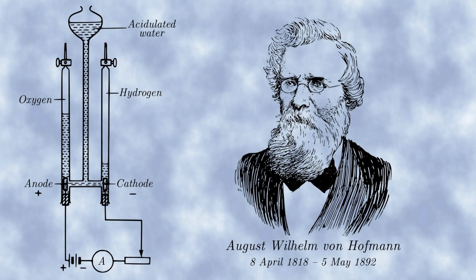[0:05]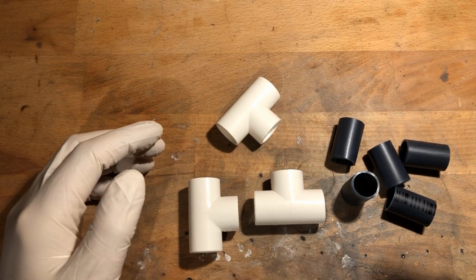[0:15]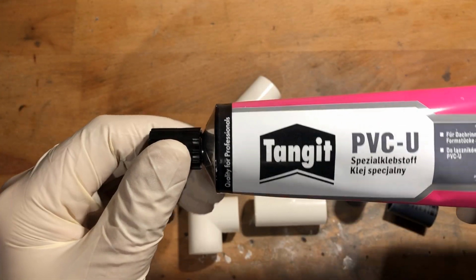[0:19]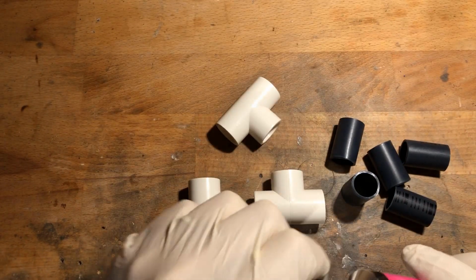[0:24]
A Hofmann voltameter is an apparatus for electrolyzing water, invented by the German chemist August Wilhelm von Hofmann in 1866. First, I connected three PVC T's with an inner diameter of 20 mm, which are actually intended for drinking water installation, using PVC pipe and appropriate adhesive.
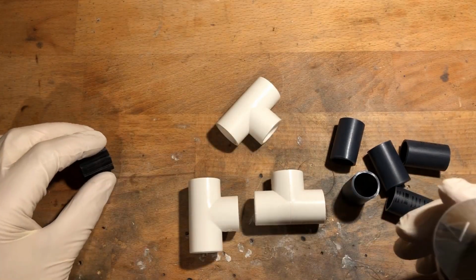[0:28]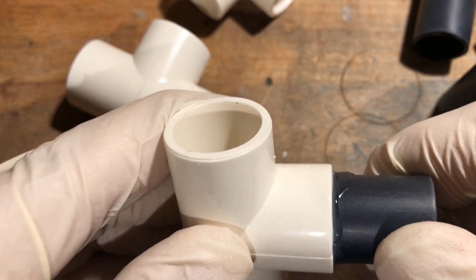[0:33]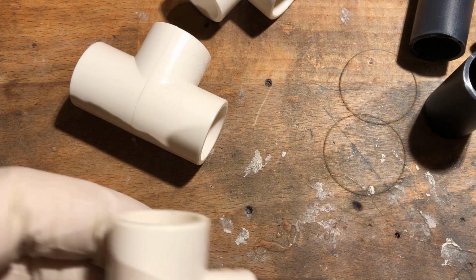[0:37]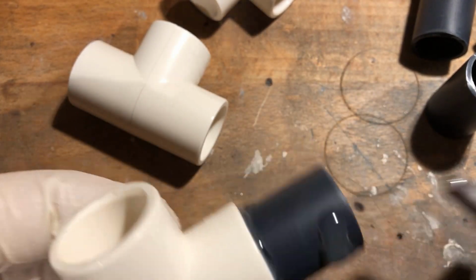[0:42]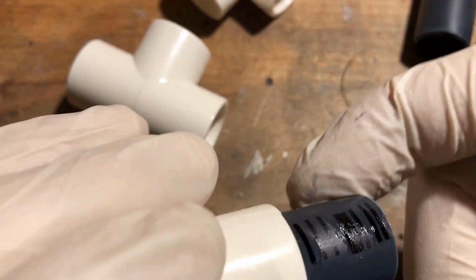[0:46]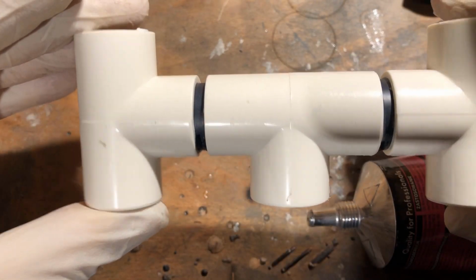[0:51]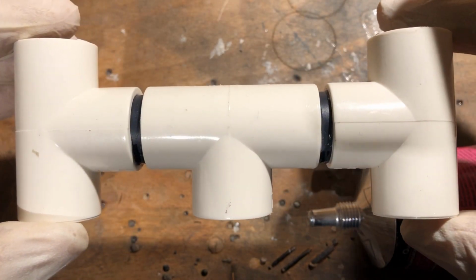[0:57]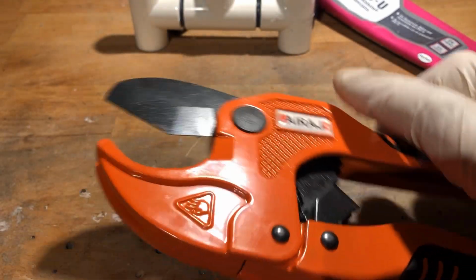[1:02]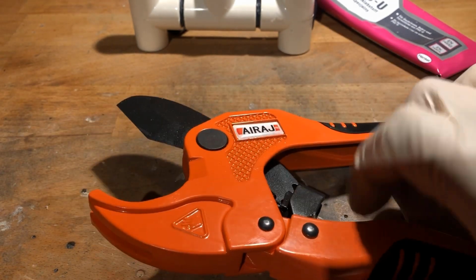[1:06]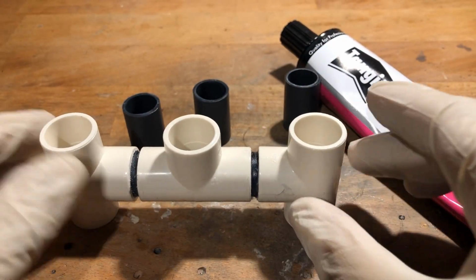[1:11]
I used a special pipe cutter to cut the PVC pipe to length. This way, perfect cuts succeed. In the next step, I cut three more PVC pipes to length accordingly.
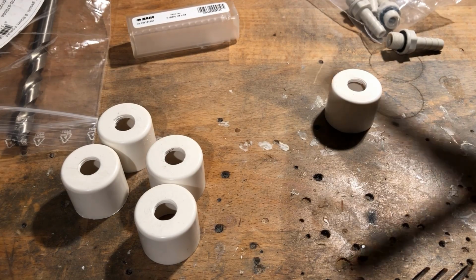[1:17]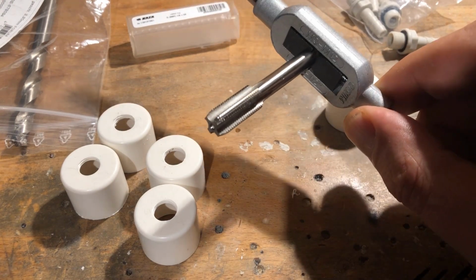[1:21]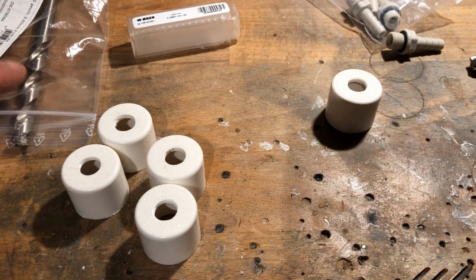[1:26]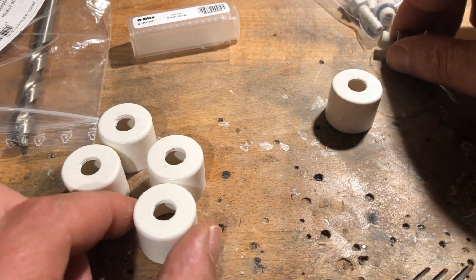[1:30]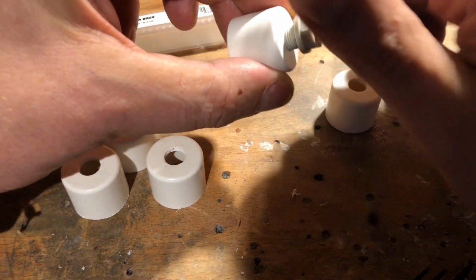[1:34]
In five PVC pipe caps with an inner diameter of 20 mm, 1/8 inch threads were cut. Pre-drilling was done with an 8.8 mm drill. The threads are intended for screwing in 1/8 inch by 6 mm screw and hose nozzles. These already have an O-ring for sealing.
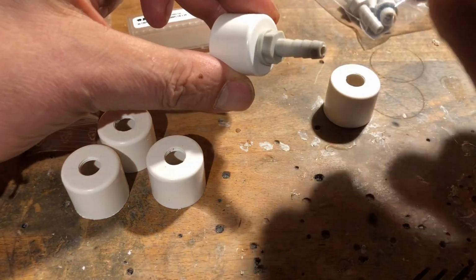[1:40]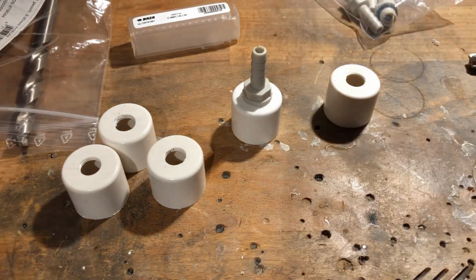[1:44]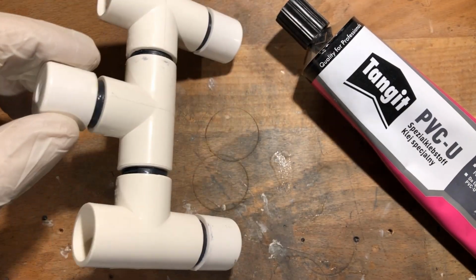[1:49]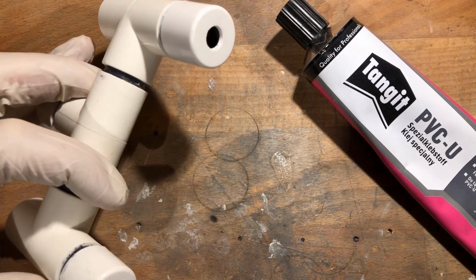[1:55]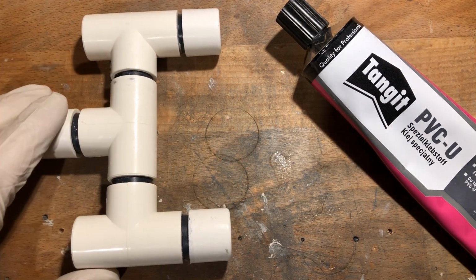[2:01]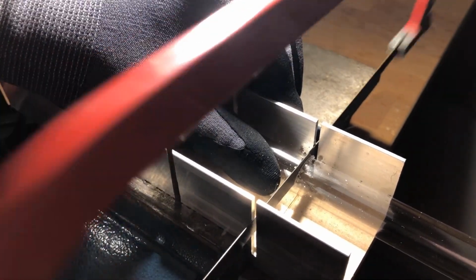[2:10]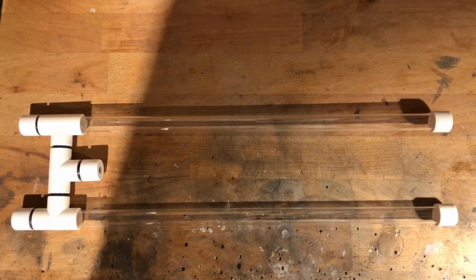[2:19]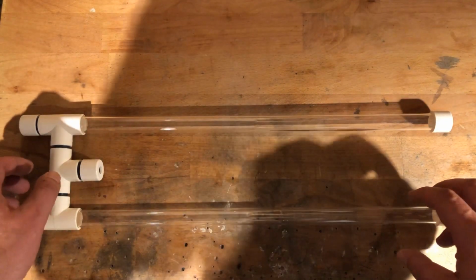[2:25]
Three of the pipe caps were then connected to the T's using the already cut pipes. A 1 meter long acrylic tube with an outer diameter of 20 millimeters and an inner diameter of 16 millimeters was then cut to size, giving me two pieces with a length of 450 millimeters. After cleaning the cutting edges, they were glued into the T's and fitted with the two remaining pipe caps. I used a two-component epoxy adhesive for this.
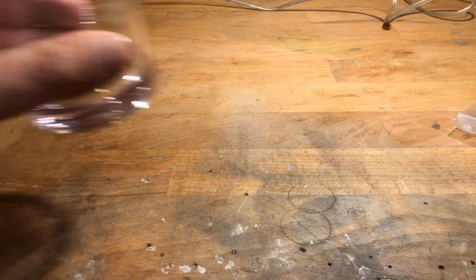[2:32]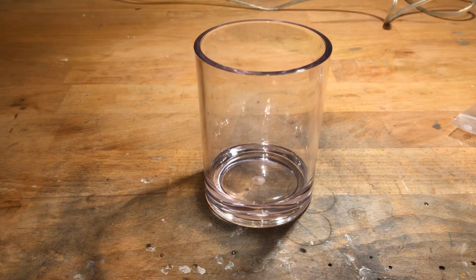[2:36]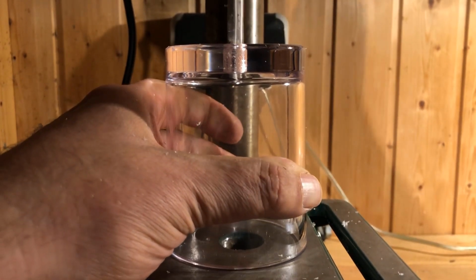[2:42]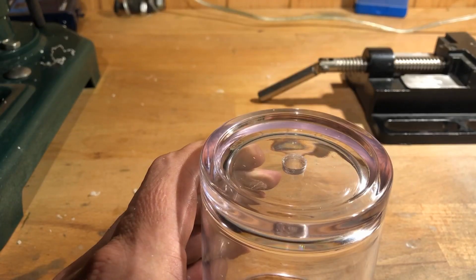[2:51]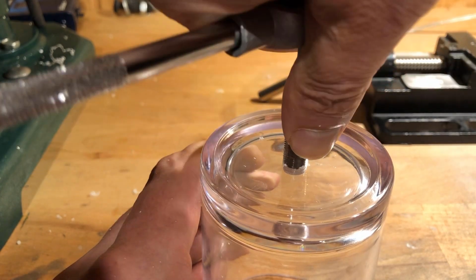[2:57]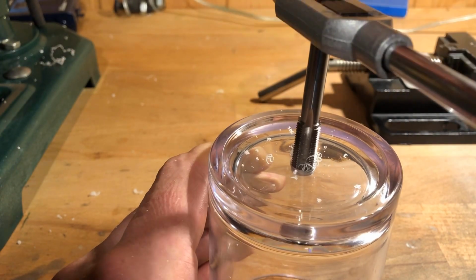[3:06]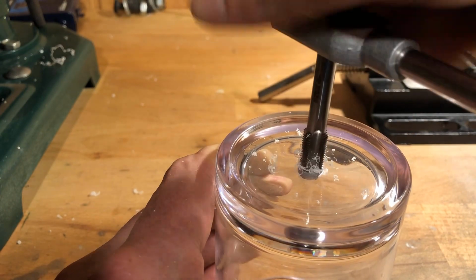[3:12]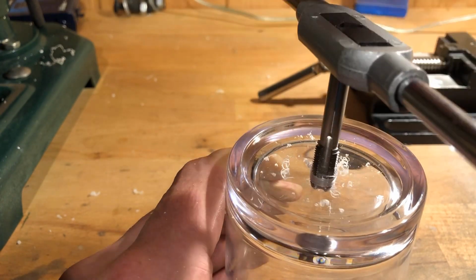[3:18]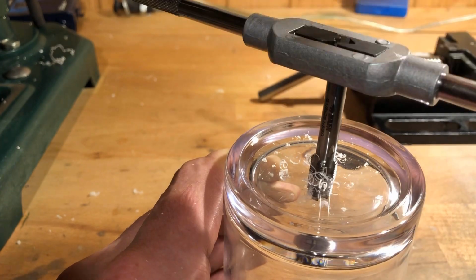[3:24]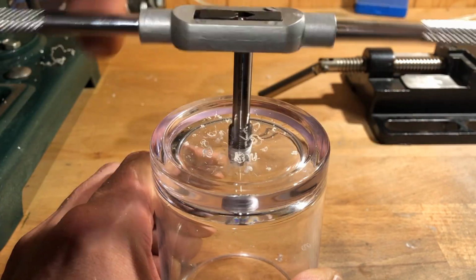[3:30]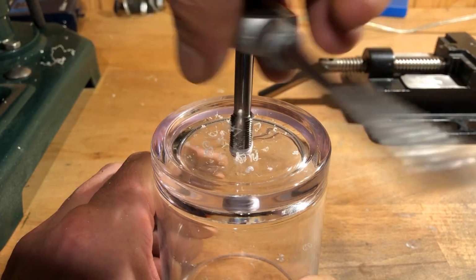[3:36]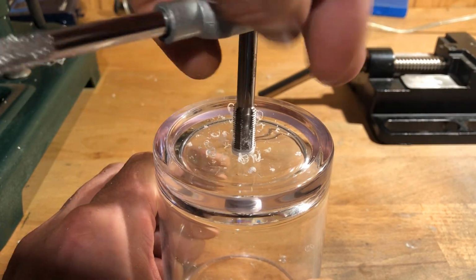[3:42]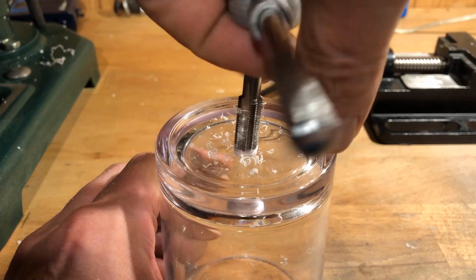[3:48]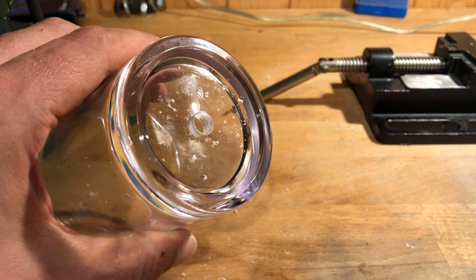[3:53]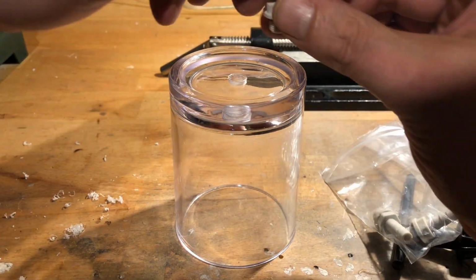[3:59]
An 8.8 mm hole was drilled into the bottom of this acrylic beaker with a capacity of 400 milliliters. Then a 1/8 inch thread was tapped. A screw and hose nozzle was also screwed in here.
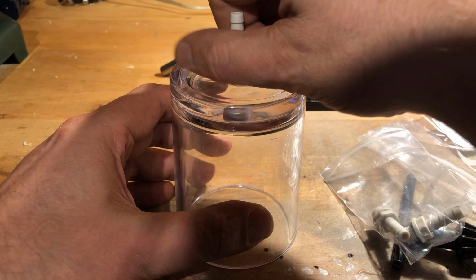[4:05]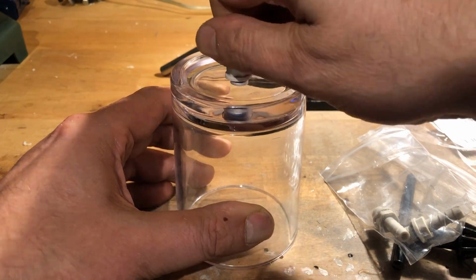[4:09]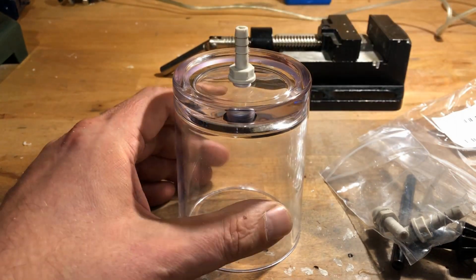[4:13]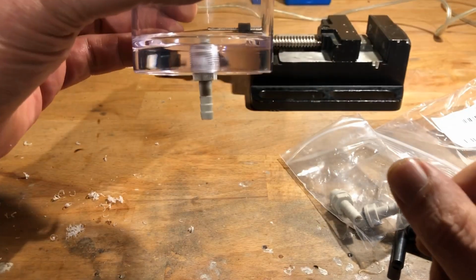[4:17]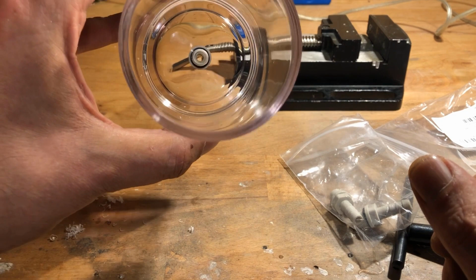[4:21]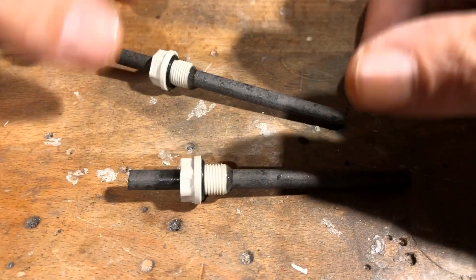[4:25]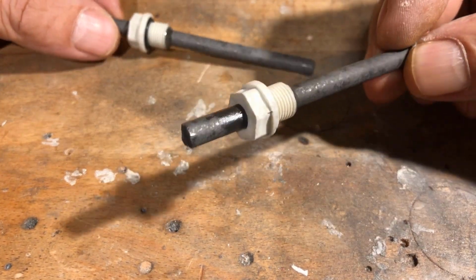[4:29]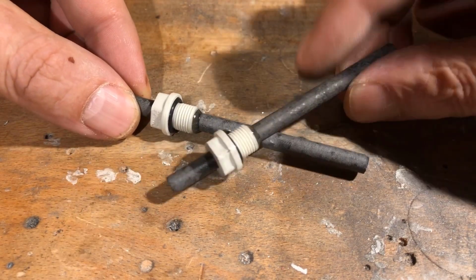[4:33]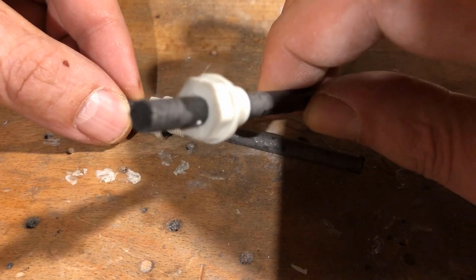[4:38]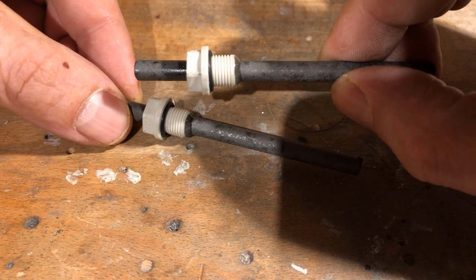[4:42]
I used two graphite rods with a diameter of 6 mm and a length of 87 mm as electrodes. On two screw and hose nozzles, the hose nozzle was cut away, the bore was widened to 6 mm, and the graphite rods were then glued in place with two-component epoxy.
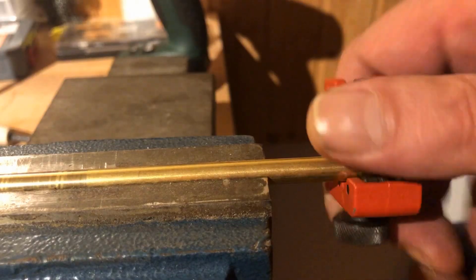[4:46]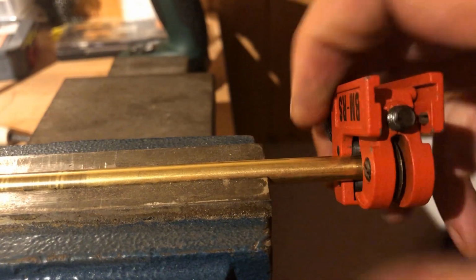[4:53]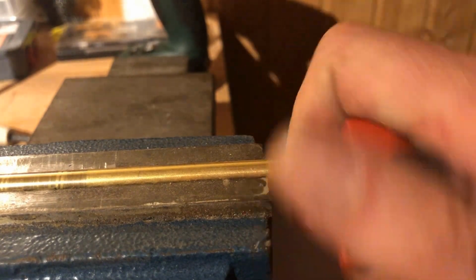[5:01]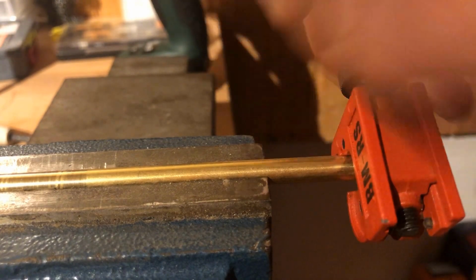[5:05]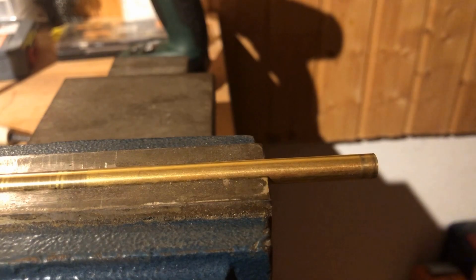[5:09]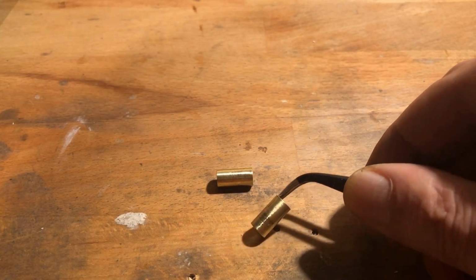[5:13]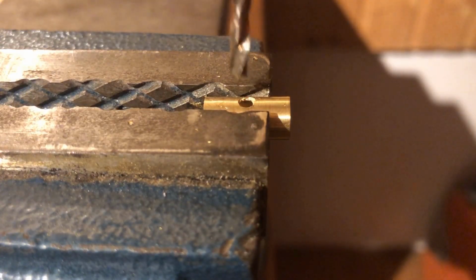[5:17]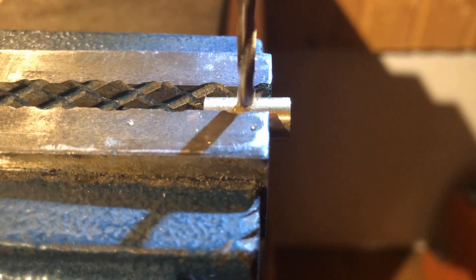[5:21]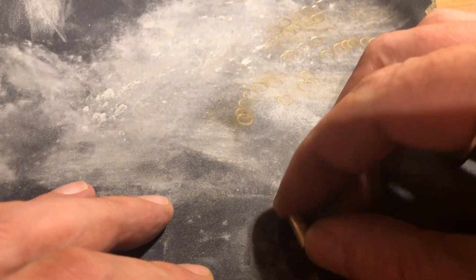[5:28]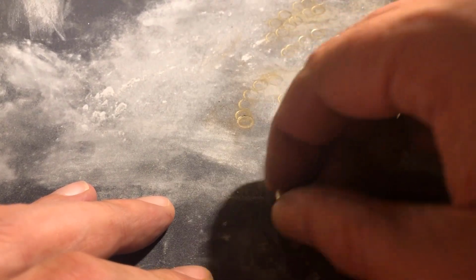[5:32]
Next, I made the terminals for the electrodes. First, I cut two brass tubes with an outer diameter of 7 mm, an inner diameter of 6 mm, and a length of 14 mm with a tube cutter. A 3 mm hole was then drilled in the center of the two brass tube sections. The holes were afterward deburred on the outside and inside with fine sandpaper.
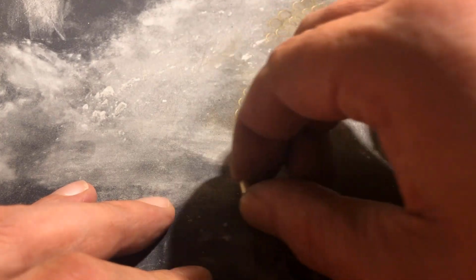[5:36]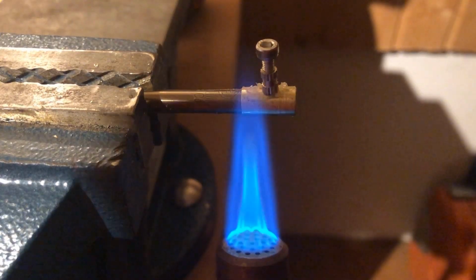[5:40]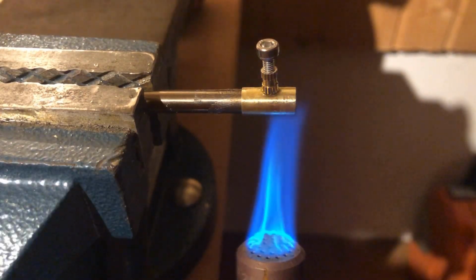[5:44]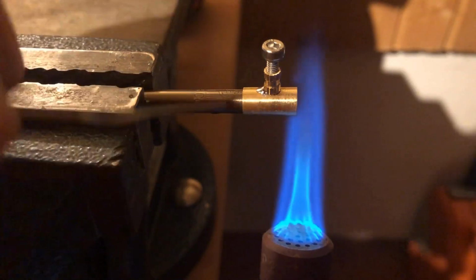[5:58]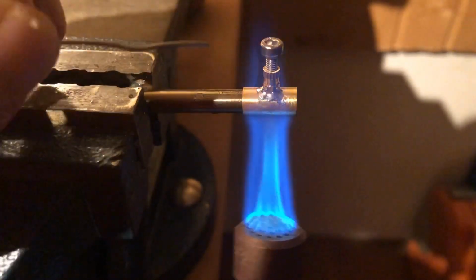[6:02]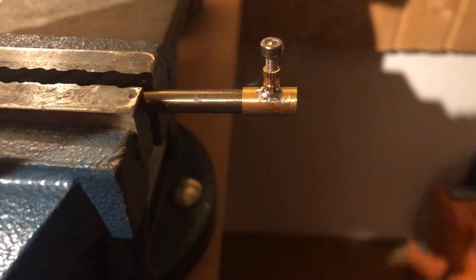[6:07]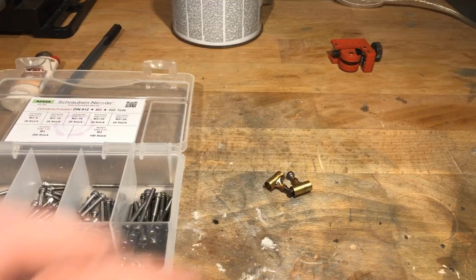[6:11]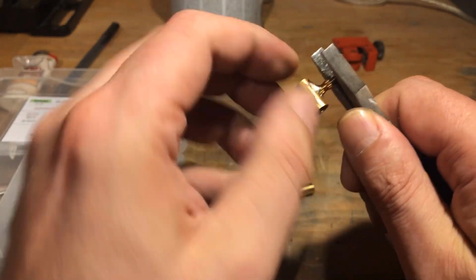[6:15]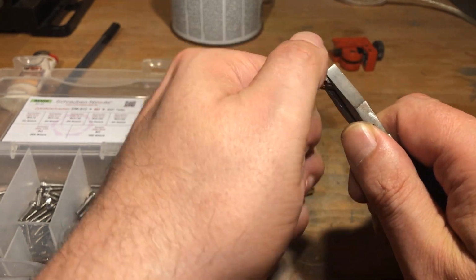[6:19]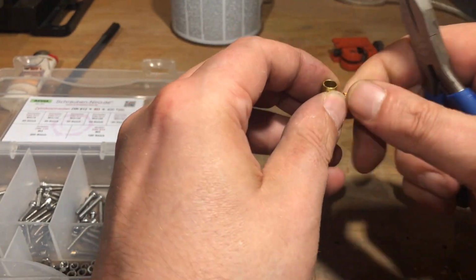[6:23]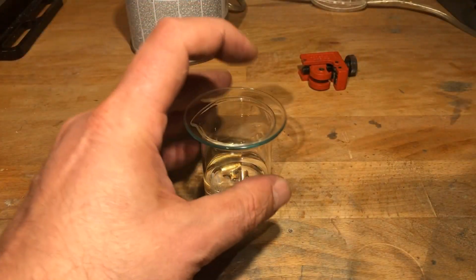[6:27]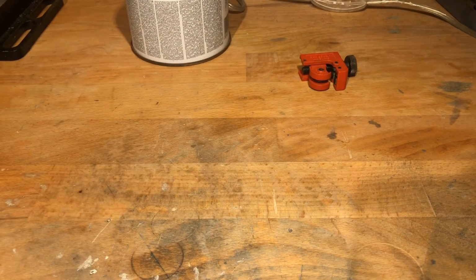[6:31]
M3 brass press nuts were soldered to the two brass tubes. The screwed in stainless steel screw helps to ensure that the hole and the thread are in alignment. Flux should also be used to ensure clean soldering. After cooling, the stainless steel screws were removed. To remove excess flux, the brass tubes were placed in isopropanol for 1 hour.
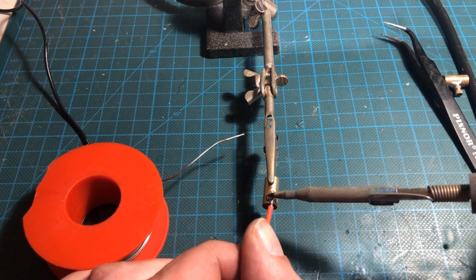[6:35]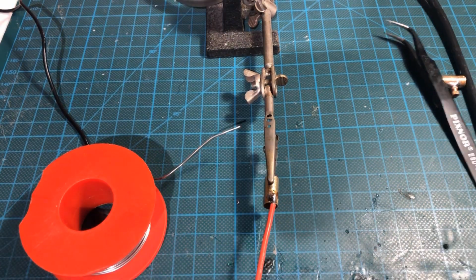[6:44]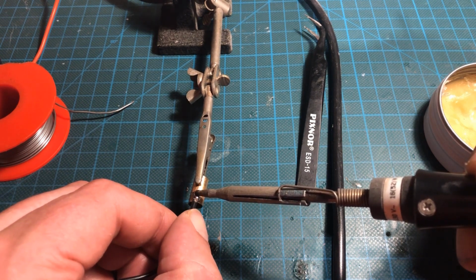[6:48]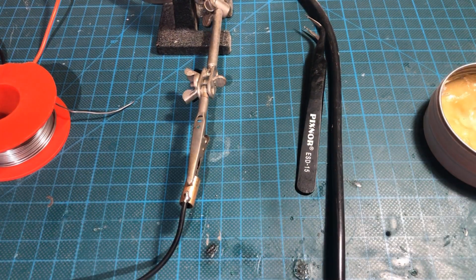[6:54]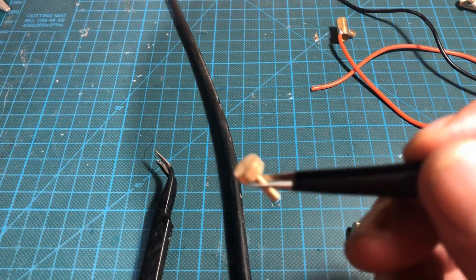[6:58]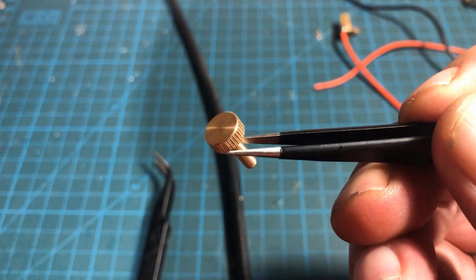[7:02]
Subsequently, stranded wires were soldered on. The sheathing of the wires I use is made of silicone and is therefore resistant to heat and chemicals. To ensure proper galvanic contact with the graphite electrodes, I utilize M3 by 10 mm brass knurled screws.
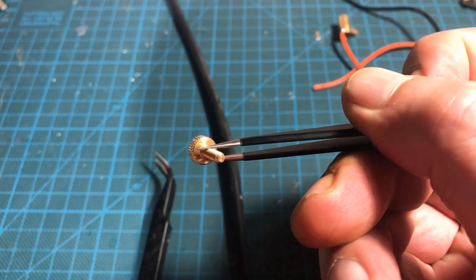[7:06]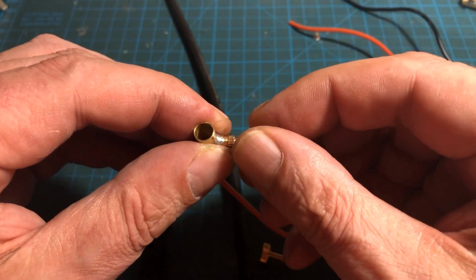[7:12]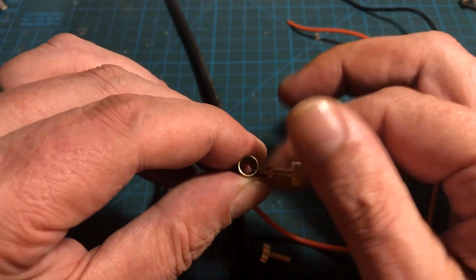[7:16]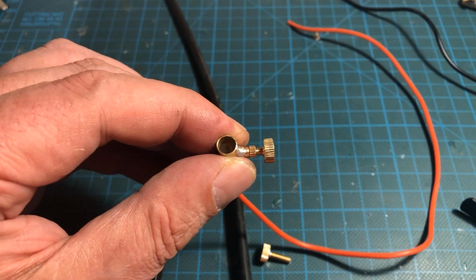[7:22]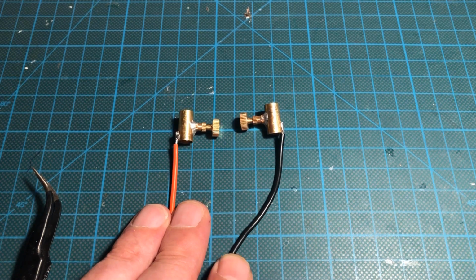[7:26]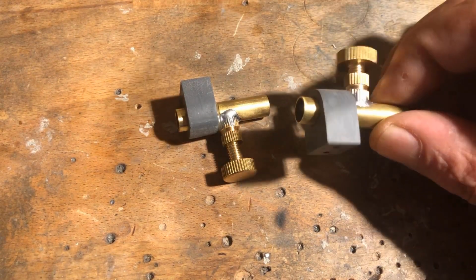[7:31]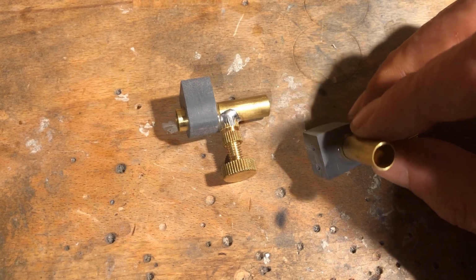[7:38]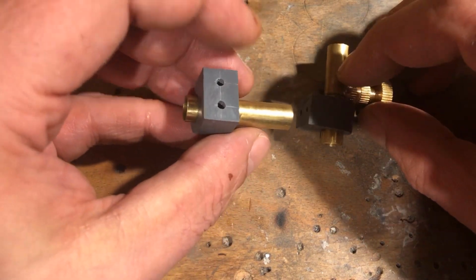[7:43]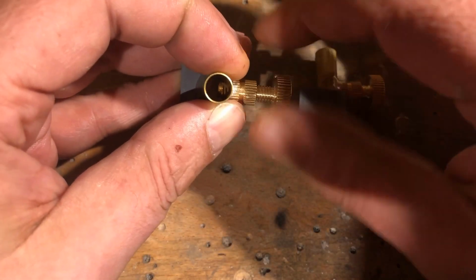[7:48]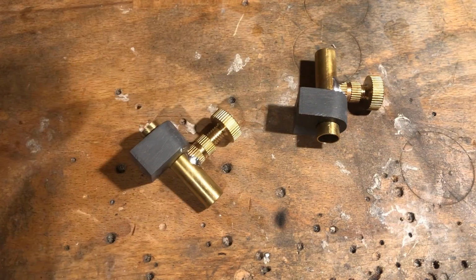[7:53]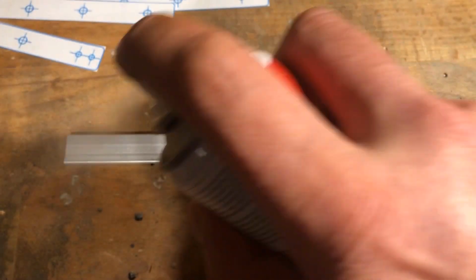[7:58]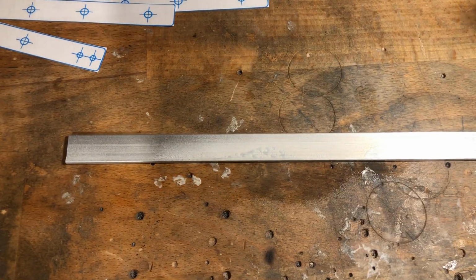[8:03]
I took a similar approach to make the pinchcocks, except that this time I used 9x8 mm brass tubing, M6 brass pressing nuts, and M6x20 mm brass knurled screws. I also made small brackets for the pinchcocks out of a 10 mm thick PVC sheet, which were then glued in place with 2-component epoxy. On the flat side, I cut 2 M3 threads in each case. A 15x3 mm aluminum flat profile was then used to make brackets for the pipe clamps and for the pinchcocks.
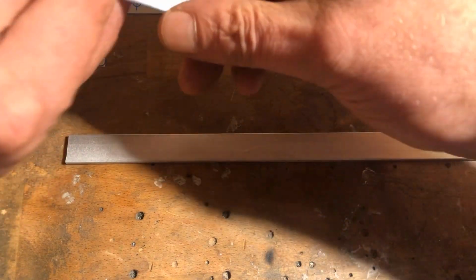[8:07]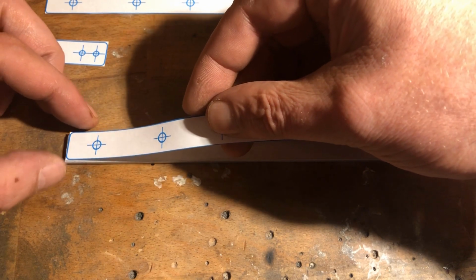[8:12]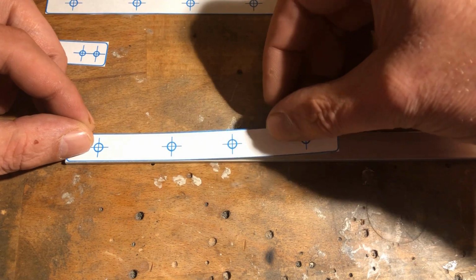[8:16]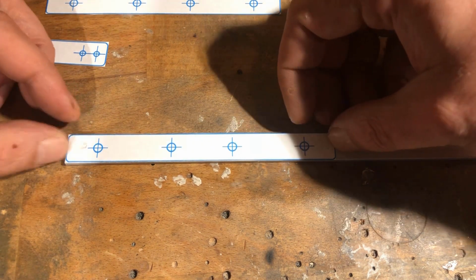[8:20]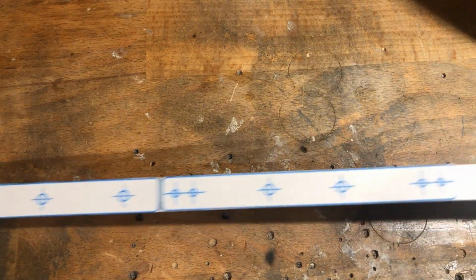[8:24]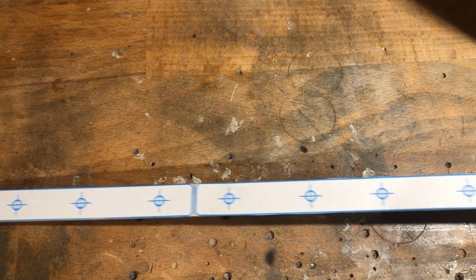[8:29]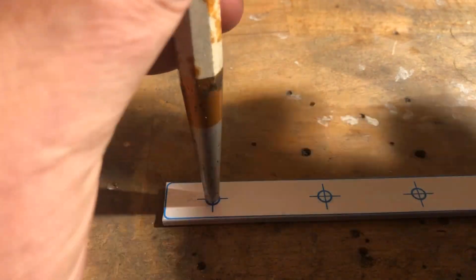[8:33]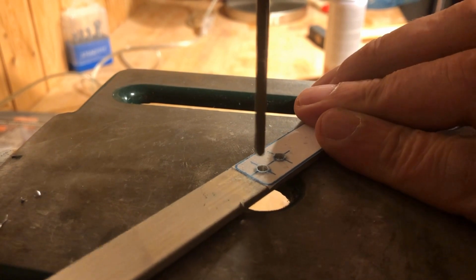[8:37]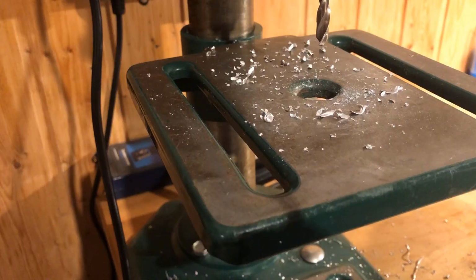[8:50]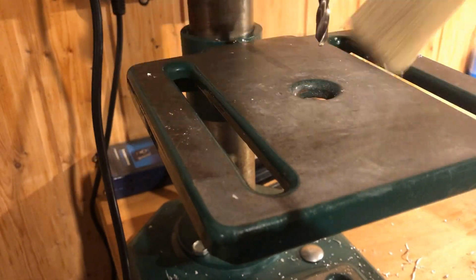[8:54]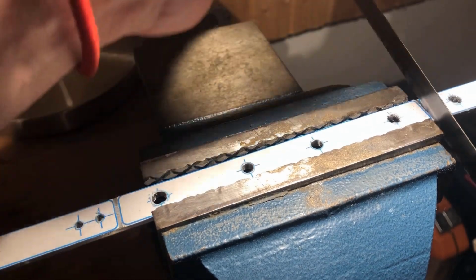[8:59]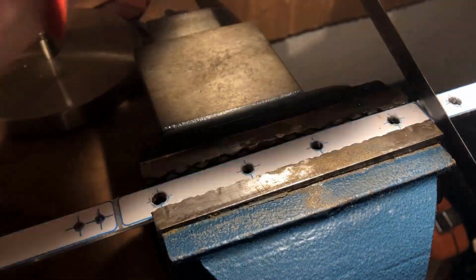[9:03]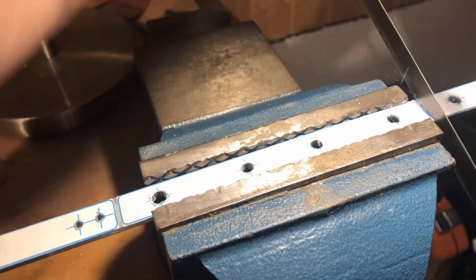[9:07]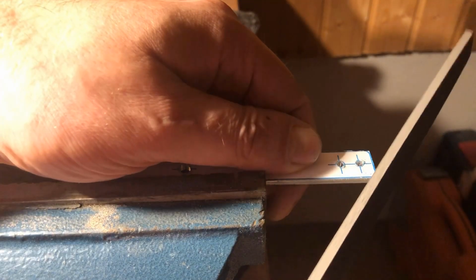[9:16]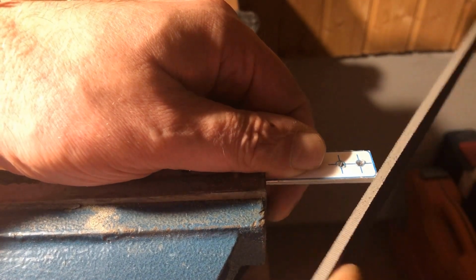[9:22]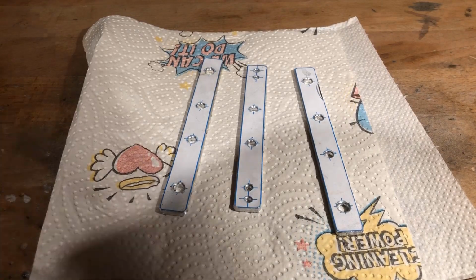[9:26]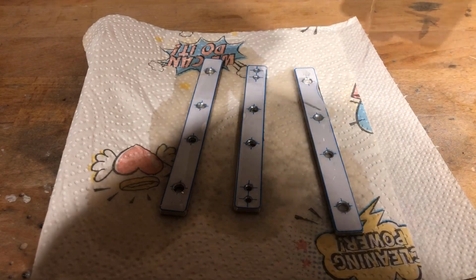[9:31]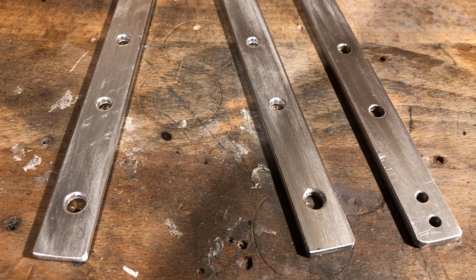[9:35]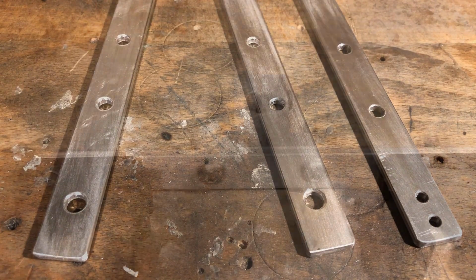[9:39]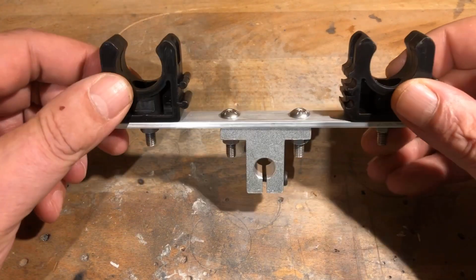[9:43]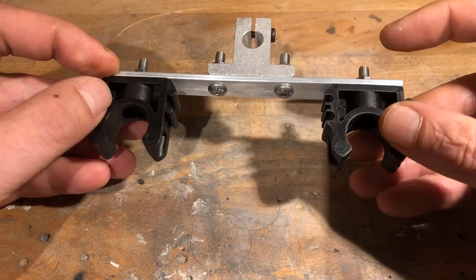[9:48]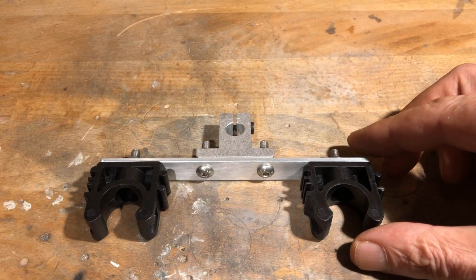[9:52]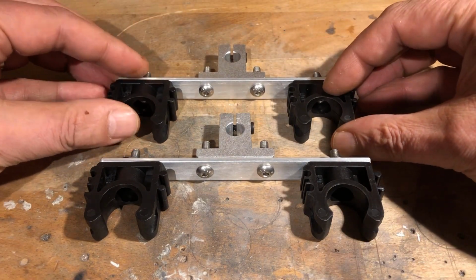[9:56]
And this is what the fully assembled brackets look like. The linear aluminum end support blocks are intended for 10 mm shafts. The plastic pipe clamps are designed for pipes with a diameter of 20 mm. All screws and nuts are made of stainless steel.
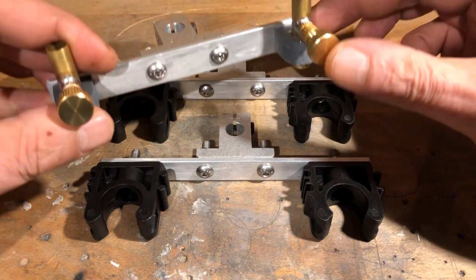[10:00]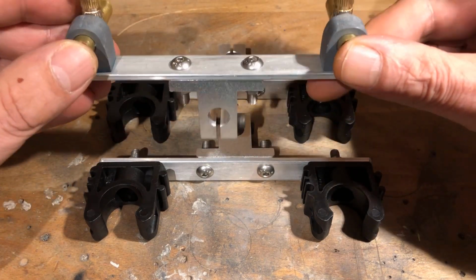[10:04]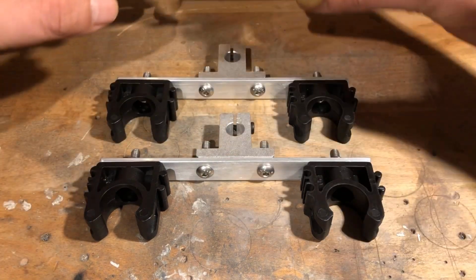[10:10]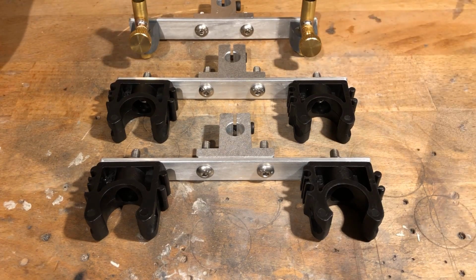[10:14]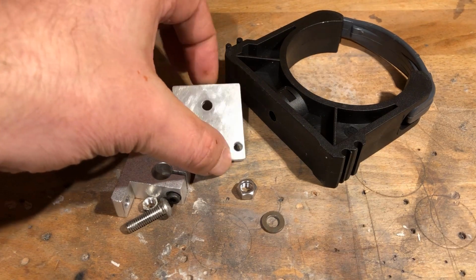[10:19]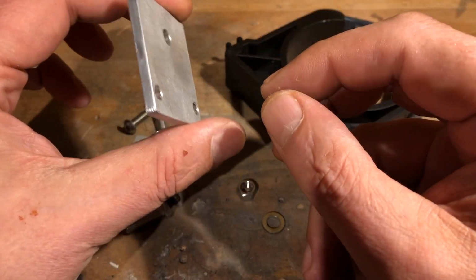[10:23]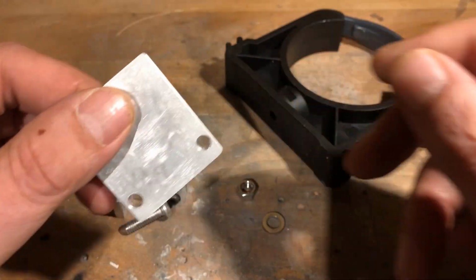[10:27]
Another bracket was made from a 40 by 4 millimeters aluminum flat profile. It is intended for fastening the pipe clamp for the acrylic glass beaker.
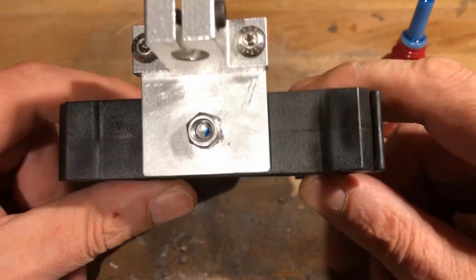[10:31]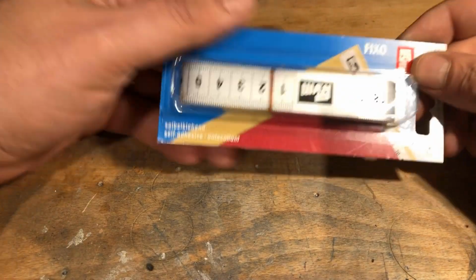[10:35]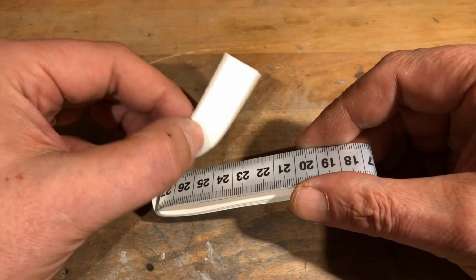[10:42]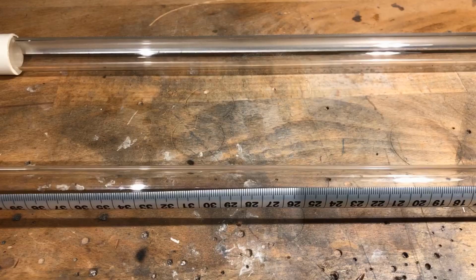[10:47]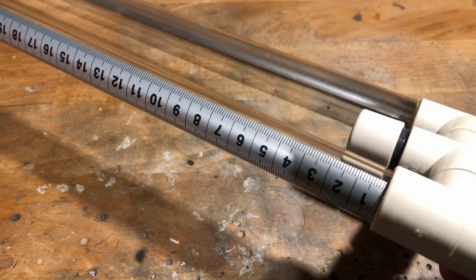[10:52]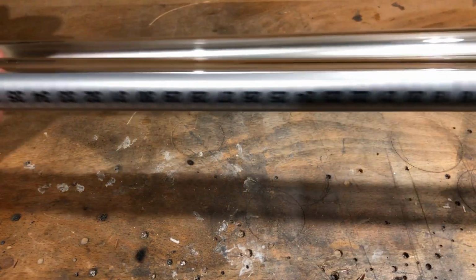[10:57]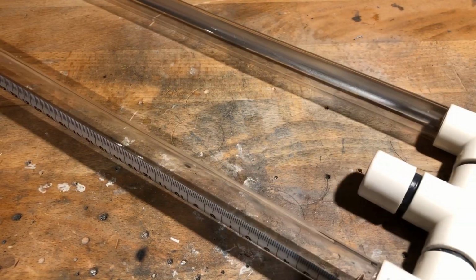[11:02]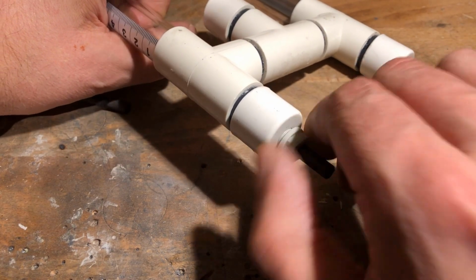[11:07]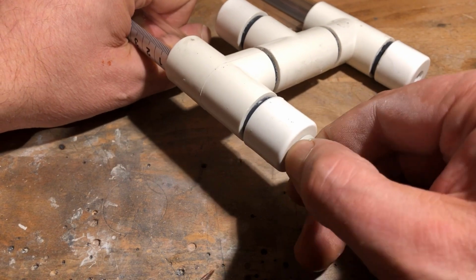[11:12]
I really wanted to add a scale to the two acrylic glass tubes so that I could measure volume. Then I stumbled across this adhesive tape measure. The dimensions are given in millimeters. That results in a volume of almost exactly 0.2 milliliters per millimeter. The adhesive tape measure is very thin and was easy to stick onto the acrylic glass tubes. To complete the tubing, the graphite electrodes and screw and hose nozzles were screwed into the threads provided.
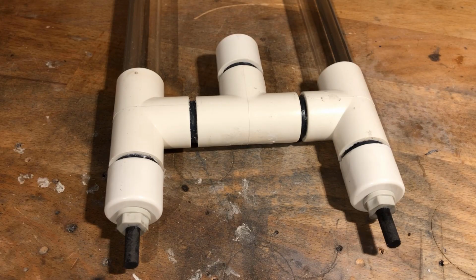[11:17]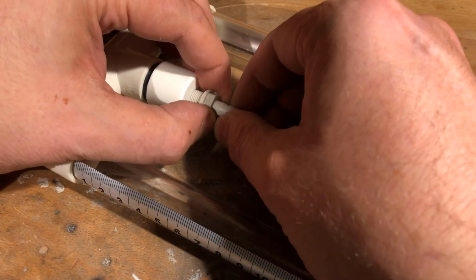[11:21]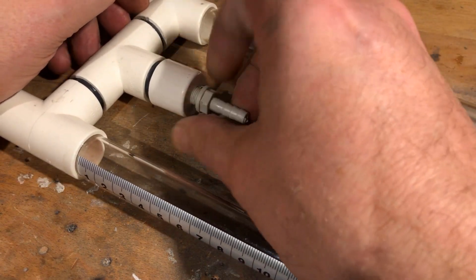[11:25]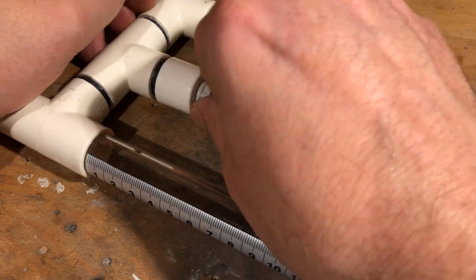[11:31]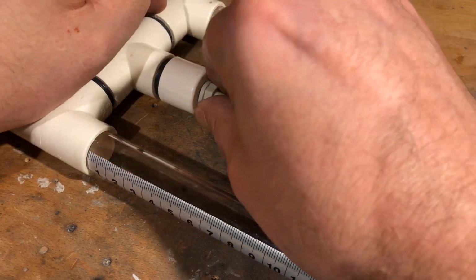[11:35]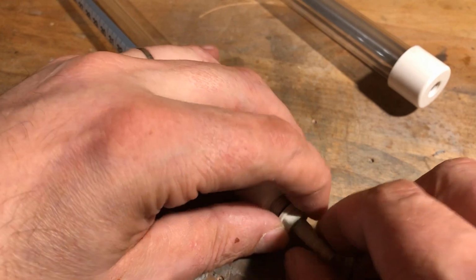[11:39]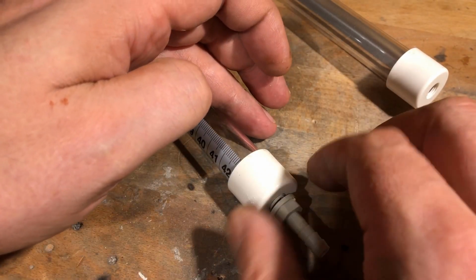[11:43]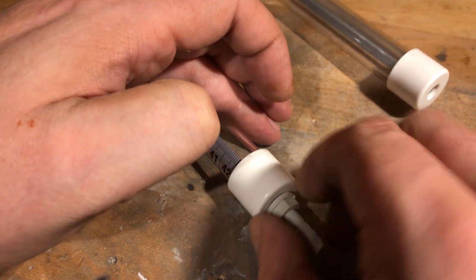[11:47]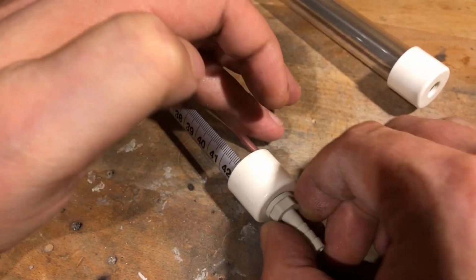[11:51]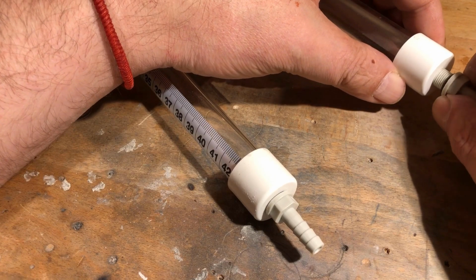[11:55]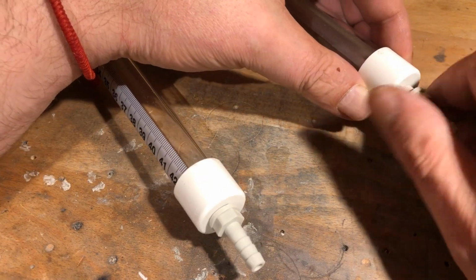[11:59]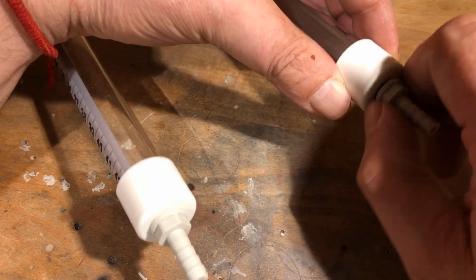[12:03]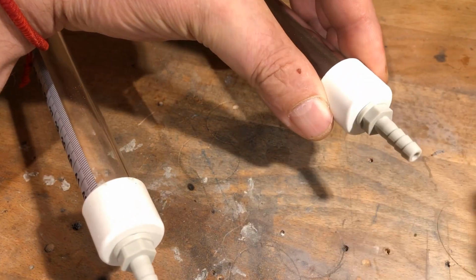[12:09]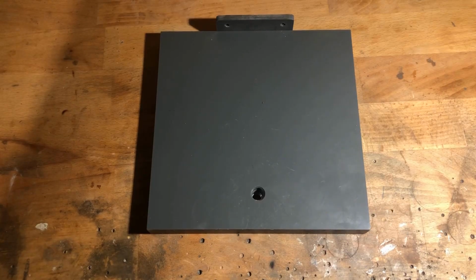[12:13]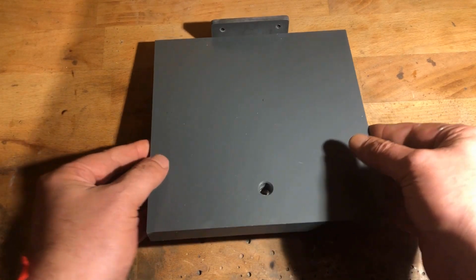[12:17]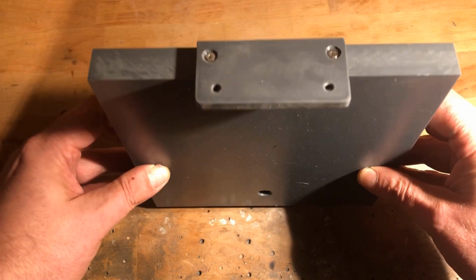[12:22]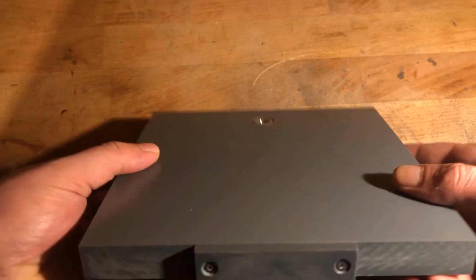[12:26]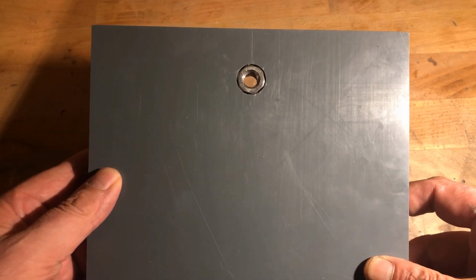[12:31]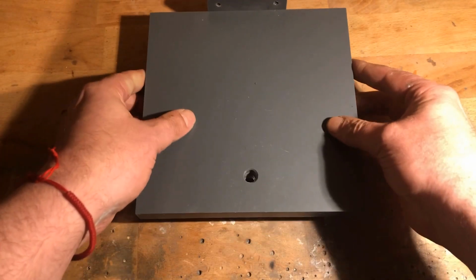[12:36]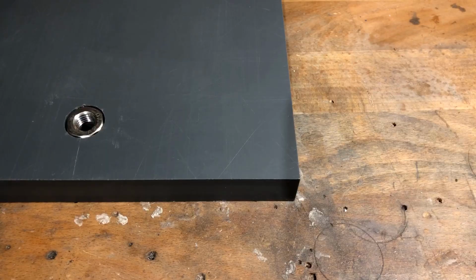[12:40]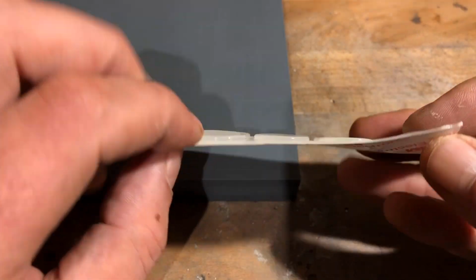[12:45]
The base plate was prepared off-camera. It consists of a PVC plate with the dimensions 200 by 200 by 20 mm. The front panel is made of 6 mm PVC plate and will later accommodate the banana jacks. The hole in the base plate is 10 mm. On the bottom side of the base plate I extended the hole to 14 mm with a Forstner drill and hammered in an M10 stainless steel nut. To prevent slipping, four self-adhesive silicon pads have been attached to the bottom side of the base plate.
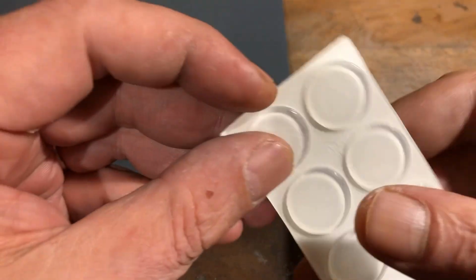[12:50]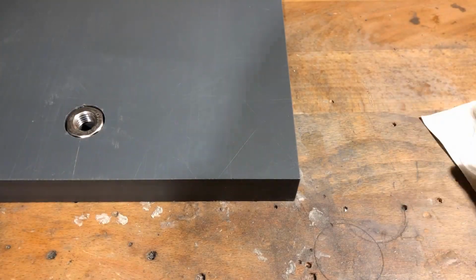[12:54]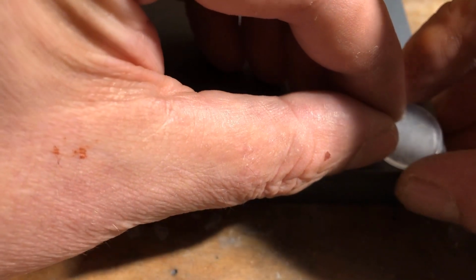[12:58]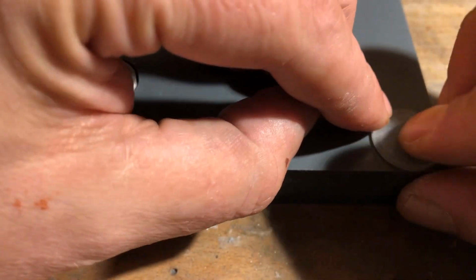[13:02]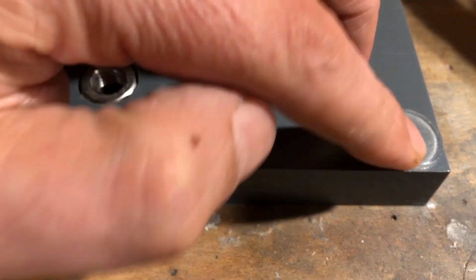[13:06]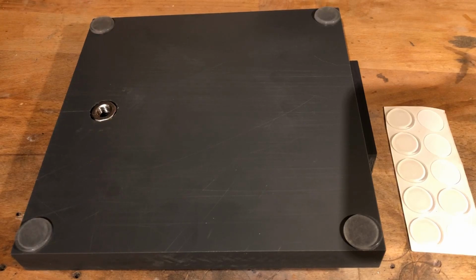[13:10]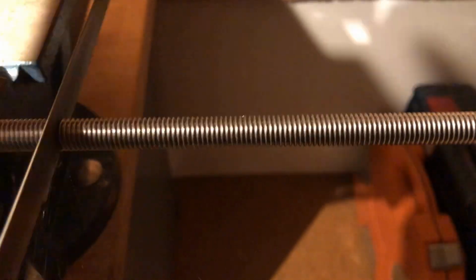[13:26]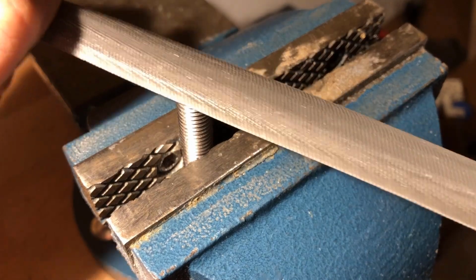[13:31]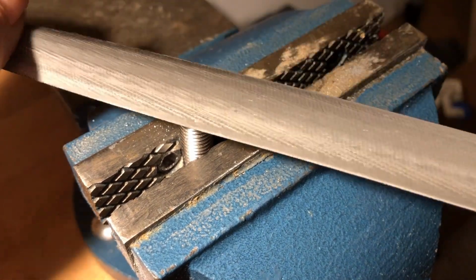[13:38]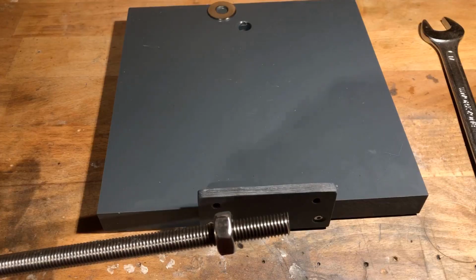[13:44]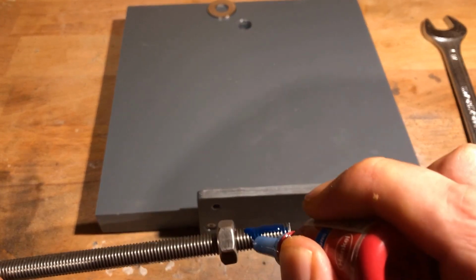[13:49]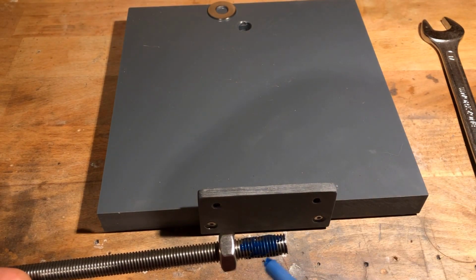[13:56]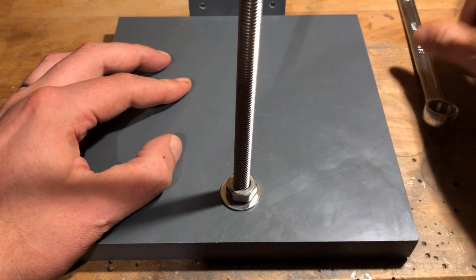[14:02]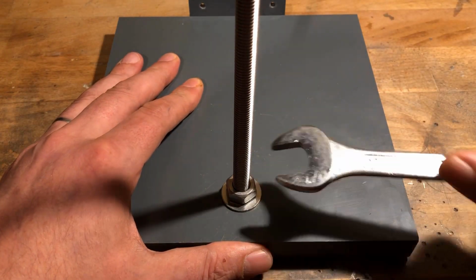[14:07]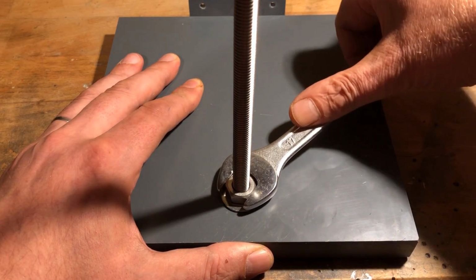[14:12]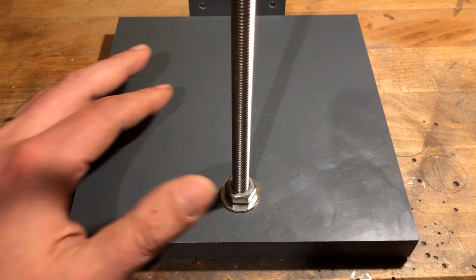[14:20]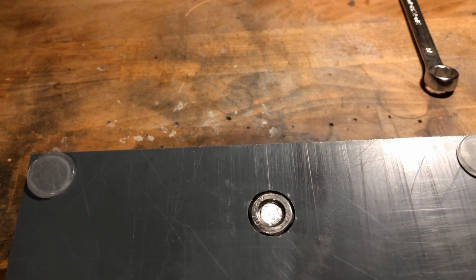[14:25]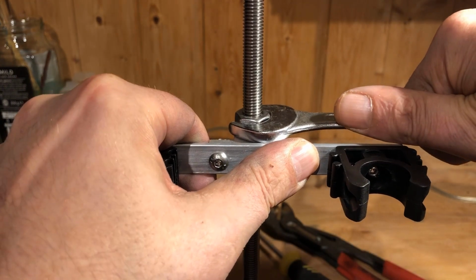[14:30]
Next, a 1 meter long M10 stainless steel threaded rod was shortened by 190 millimeters. The cutting edge was then smoothed with a file. The next step was to screw the threaded rod to the base plate. Now the brackets were positioned on the threaded rod and each was secured with two M10 stainless steel nuts.
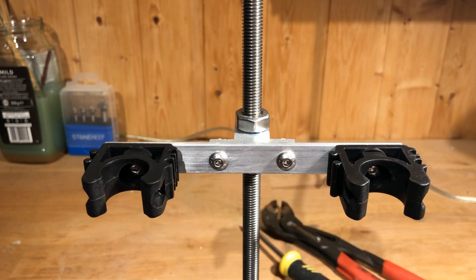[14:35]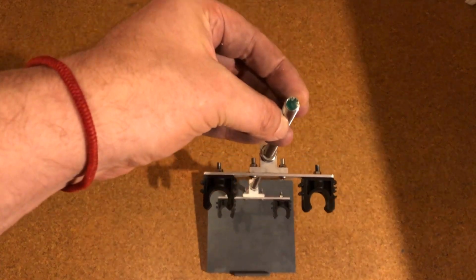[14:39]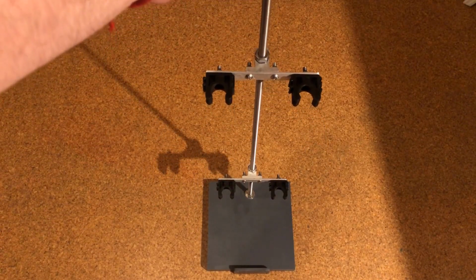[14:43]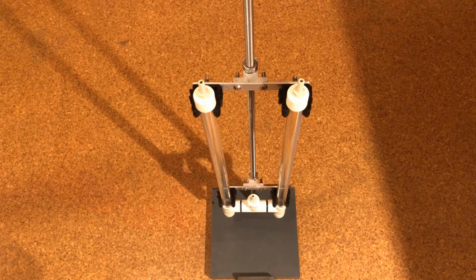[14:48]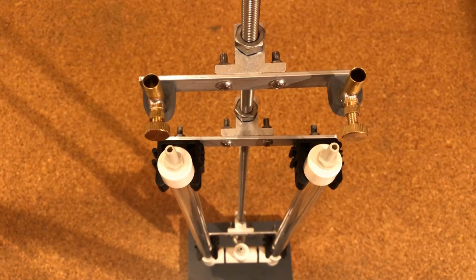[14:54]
Unfortunately, the clamping screws of the linear aluminum support blocks couldn't be tightened enough to hold them on the threaded rod alone. The pipe clamps should be positioned so that the tubing has no play in the vertical axis. After the tubing, the bracket with the pinchcocks was mounted on the threaded rod.
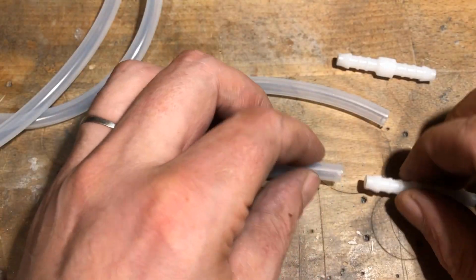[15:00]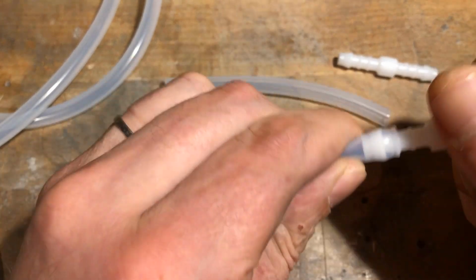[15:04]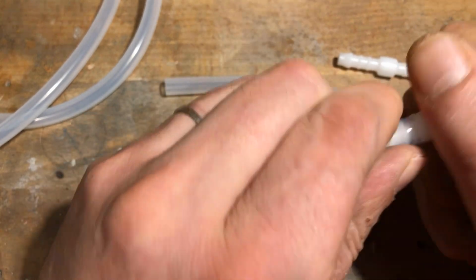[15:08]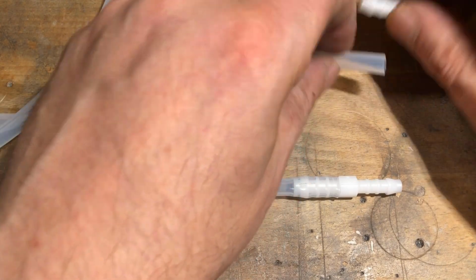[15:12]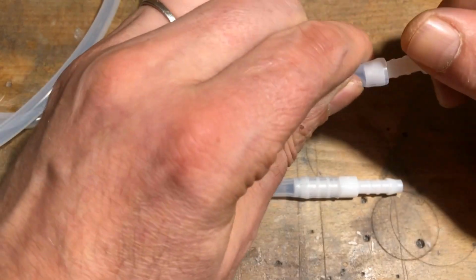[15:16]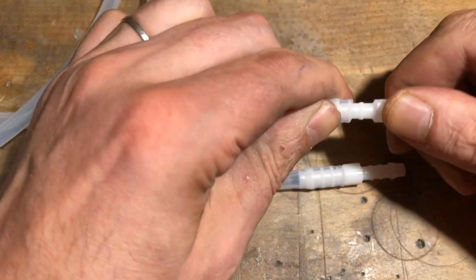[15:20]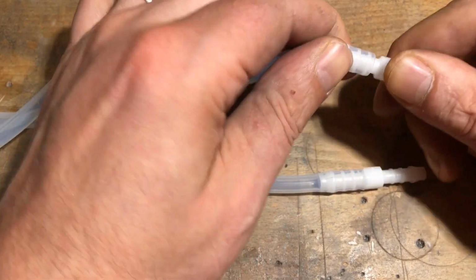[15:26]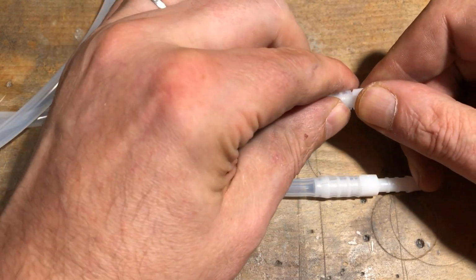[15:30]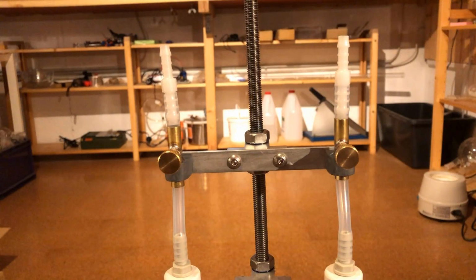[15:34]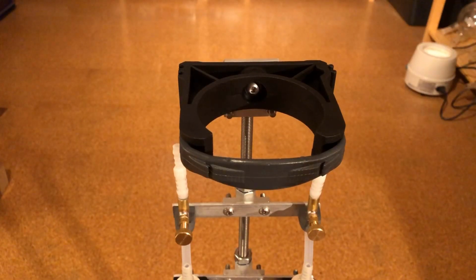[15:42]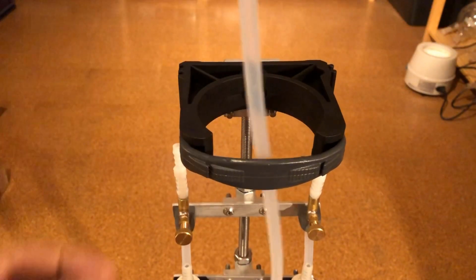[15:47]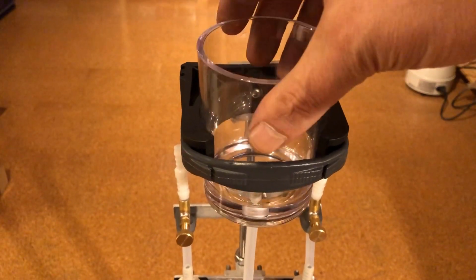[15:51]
Two pieces of silicone tubing 8x4 mm, each 100 mm long, were connected at one end with 6 mm plastic tubing connectors. The silicone hoses were then passed through the pinchcocks and connected to the screw and hose nozzles. The acrylic glass beaker was connected to the last remaining screw and hose nozzle. A silicone hose with the same outer and inner diameters was also used here.
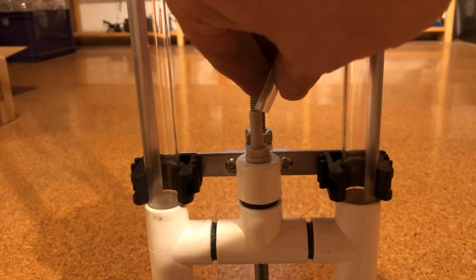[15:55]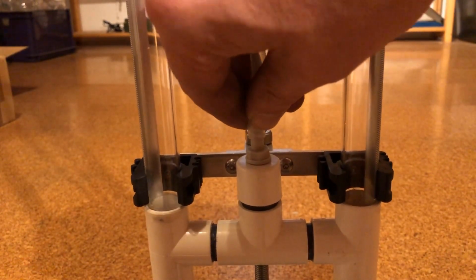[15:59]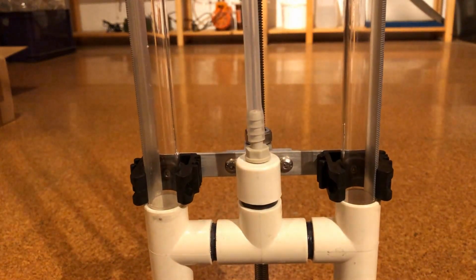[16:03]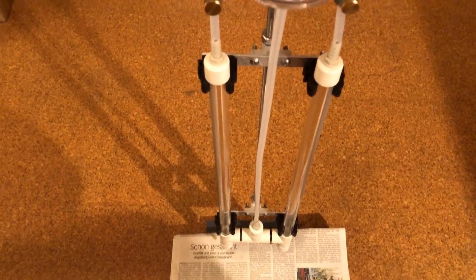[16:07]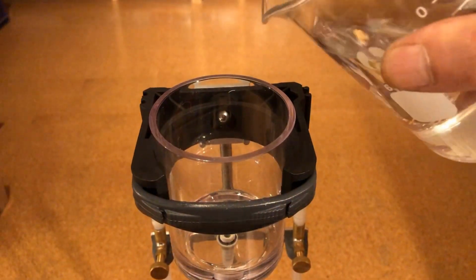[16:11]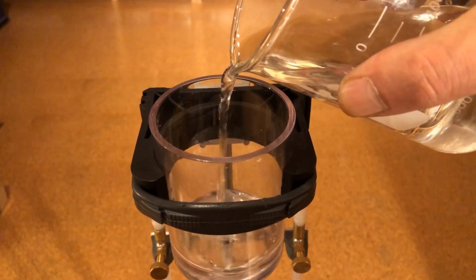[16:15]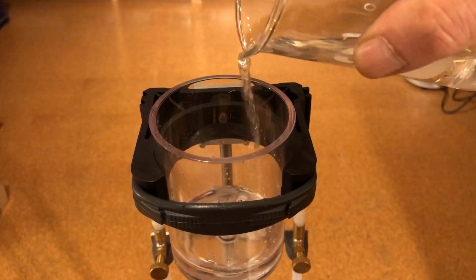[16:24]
Now it was time to check the tightness of the apparatus. To do this, a newspaper was placed underneath. I then poured in distilled water until the level was above the top pipe caps. If there are no water spots on the newspaper overnight, the apparatus is tight. Otherwise, leaks can be sealed with two-component epoxy if necessary.
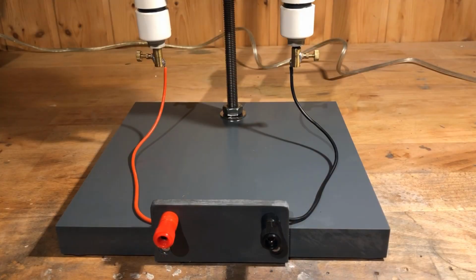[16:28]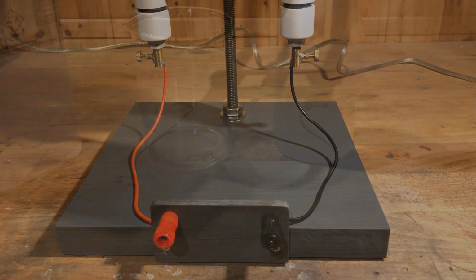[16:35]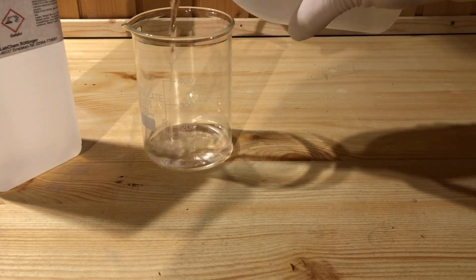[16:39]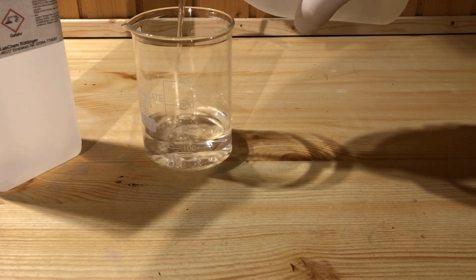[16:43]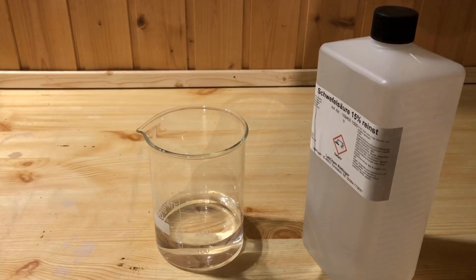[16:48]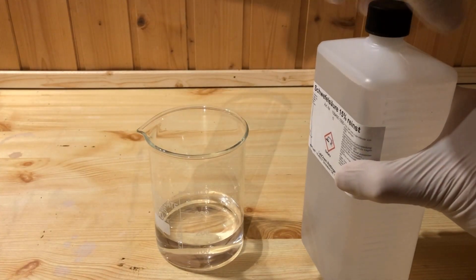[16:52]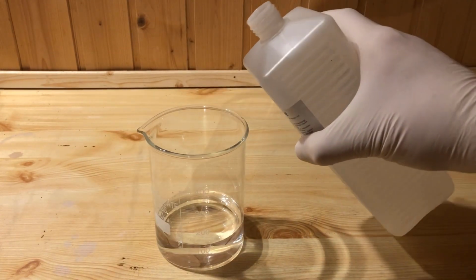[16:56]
Finally, the two banana jacks were screwed in and connected to the graphite electrodes. It remains to show the Hofmann voltameter in operation. I used diluted sulfuric acid as the electrolyte. For this, 180 milliliters of 15% sulfuric acid was further diluted with 120 milliliters of distilled water. The sulfuric acid serves only to increase the conductivity of the water.